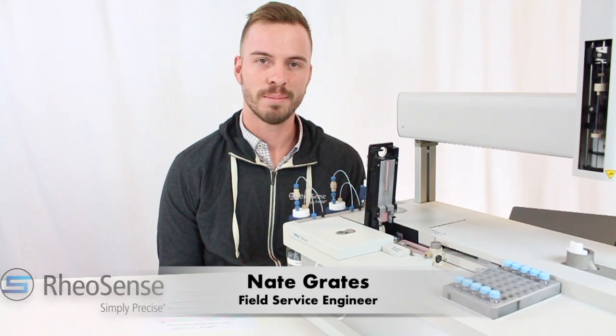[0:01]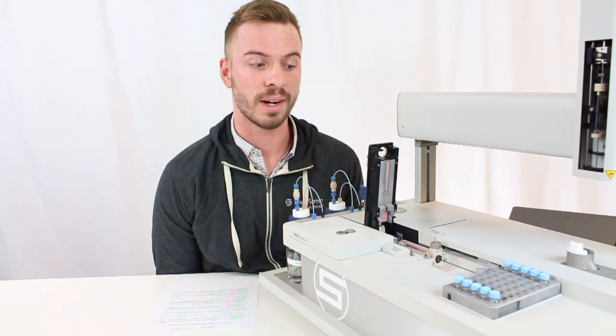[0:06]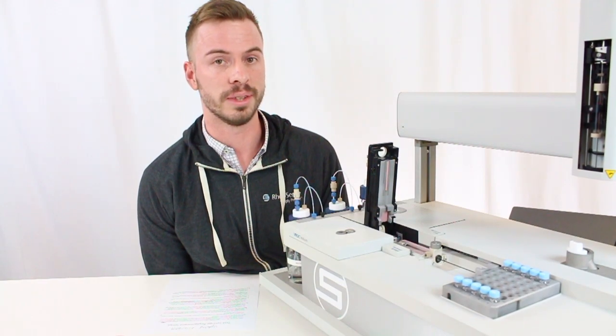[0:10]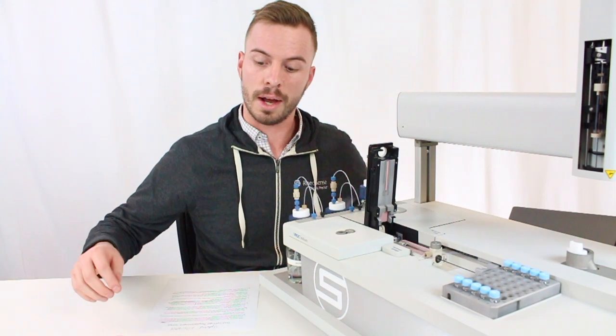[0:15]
Today we're going to be going over how to remove and replace your test syringe on your VROC Initium instrument. So first, I want to go over the tools you're going to need to do this job.
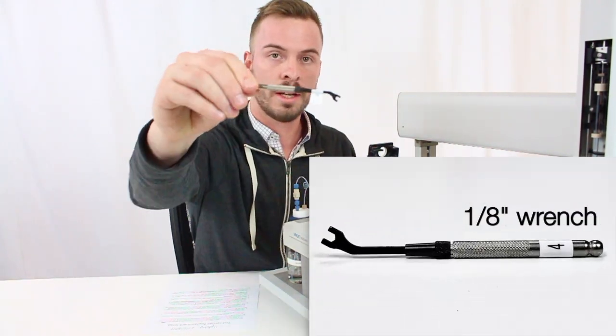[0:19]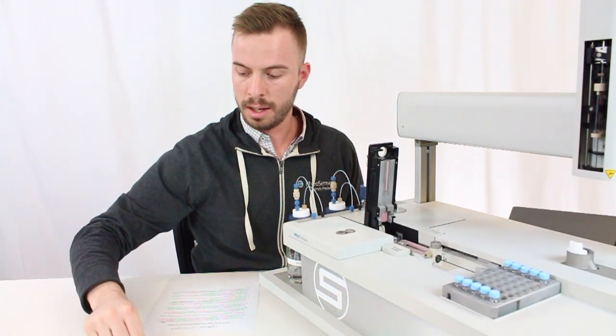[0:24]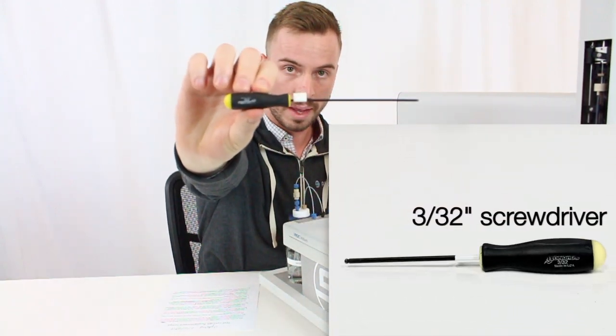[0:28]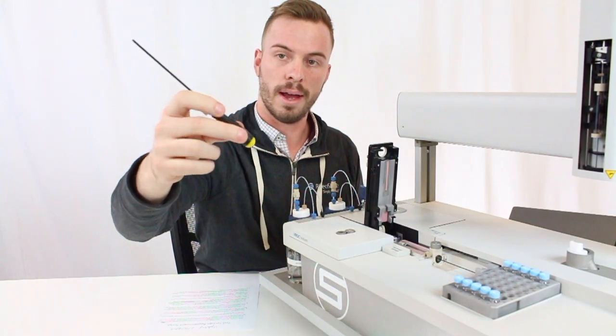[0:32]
First one is this 1/8 inch wrench. This one is provided in the starter kit that comes with your Initium. Second tool you're going to need is this 3/32 inch screwdriver. This one's a little bit longer than the normal ones that come with your starter kit, but it's the same thing.
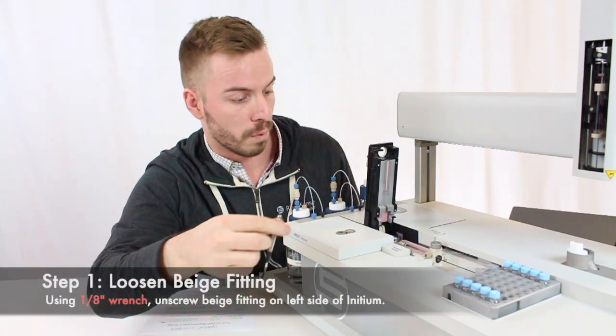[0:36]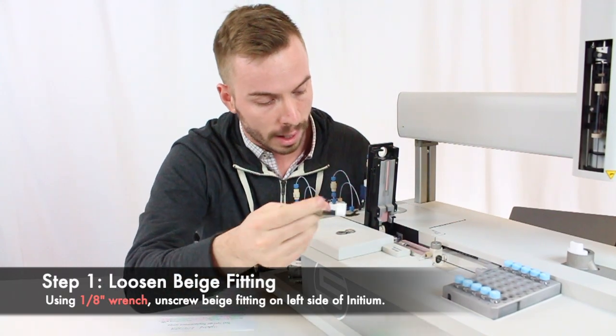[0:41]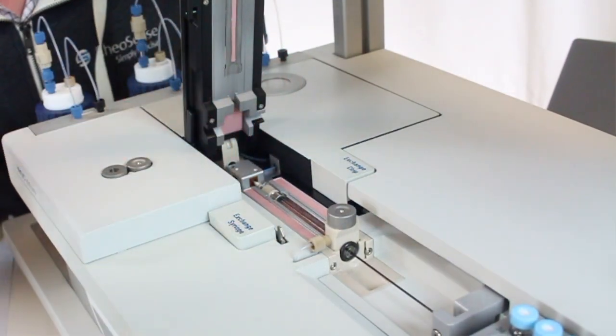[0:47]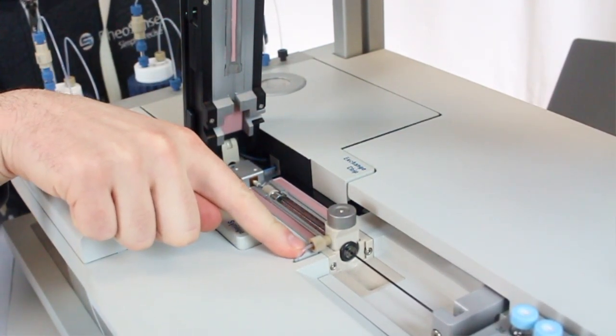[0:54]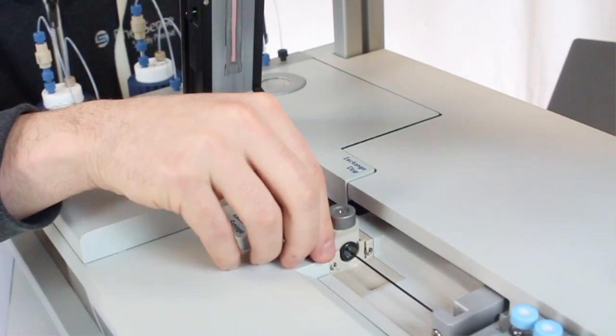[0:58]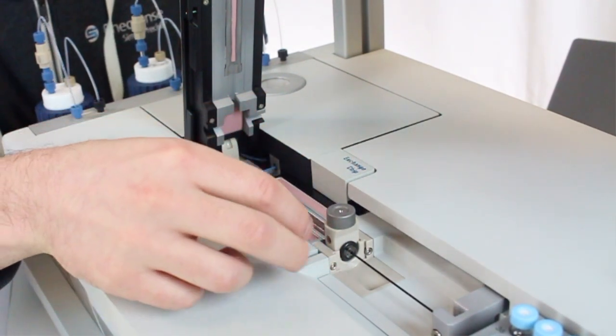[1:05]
So the first thing you need to do is remove this fitting that's closest to the left side of your Initium. So I'll go ahead and do that now. Okay, once that's taken care of, you can go ahead and remove this beige fitting from the middle of the test syringe. You don't need a tool to do that, you can just loosen it with your fingers. Once that's out, you can just kind of leave it hanging there.
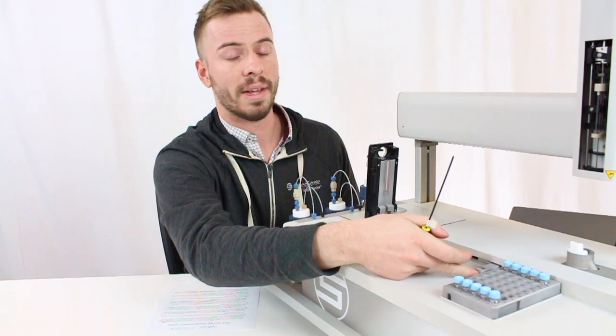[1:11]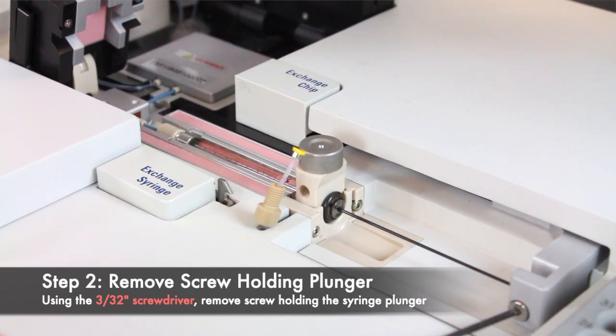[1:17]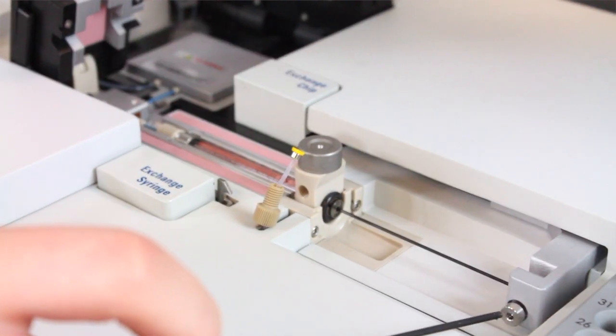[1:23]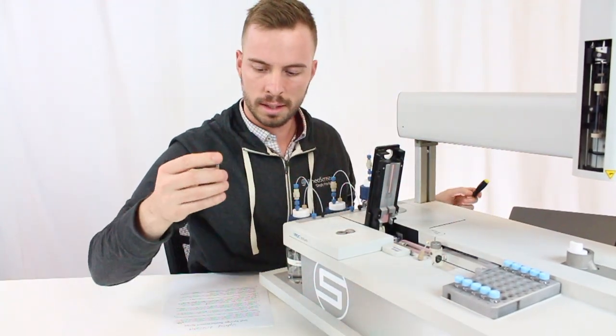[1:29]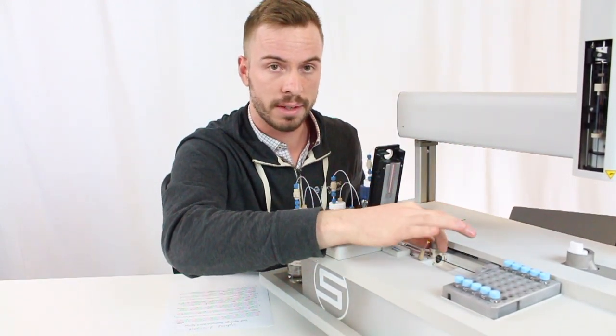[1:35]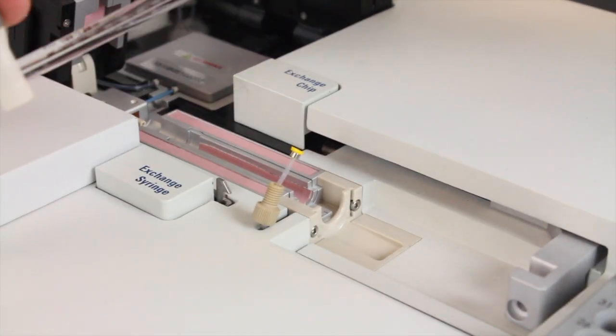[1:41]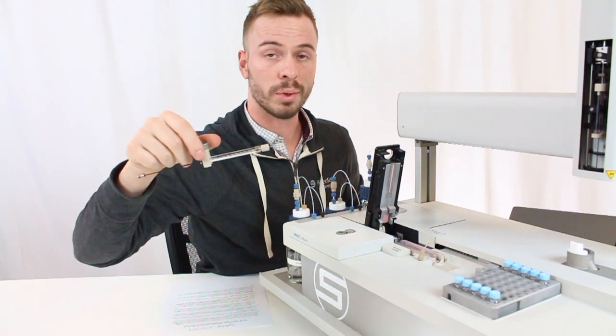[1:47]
And the last fitting you're going to need to remove is the one that's holding the plunger. That's where you're going to use the screwdriver. The screw should just slide right out of there. Once you loosen all the fittings, you can just take the test syringe, lift it slowly from the right hand side, and then just slide it out from the valve that it is in. So this is what it looks like once you take it out. To replace it, you're just going to do what I just showed you in the reverse order.
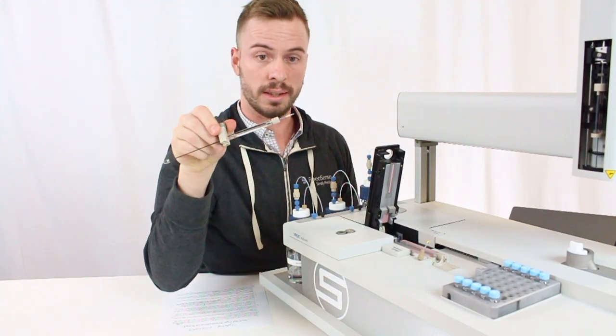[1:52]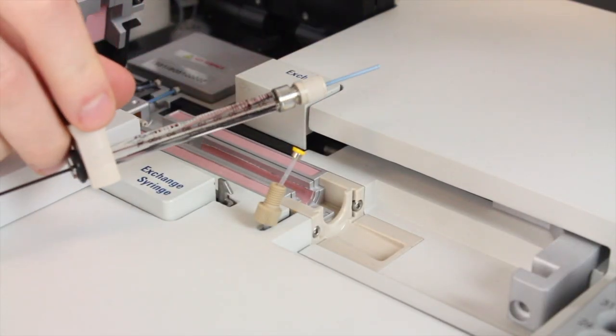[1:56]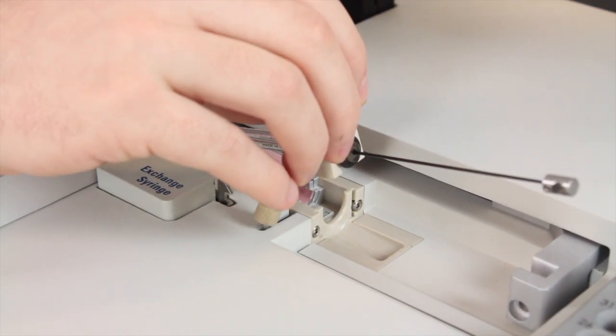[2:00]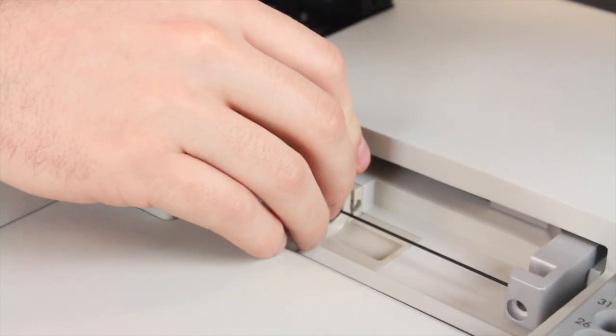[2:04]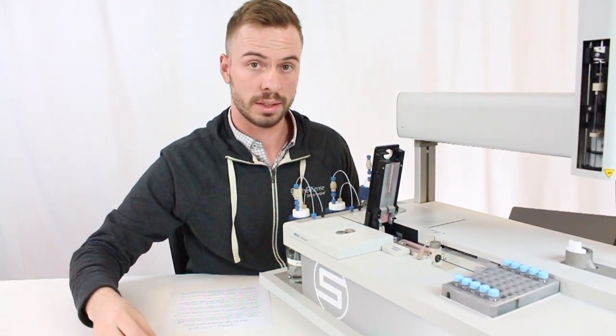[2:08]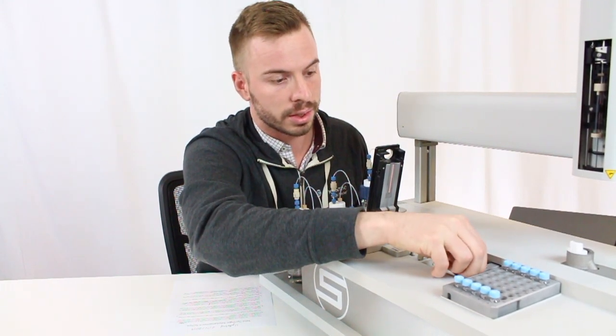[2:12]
So we're first going to take this and insert this blue tube into the valve that you took it out of. Slide it right back in, and it should fit very snug right where you took it out from. So the first thing we'll replace is the screw that you took out from the plunger. That should just slide right in there. You want to make sure your plunger is aligned so the screw has an opening to go through.
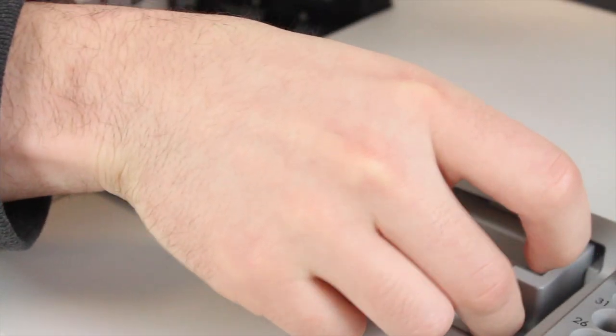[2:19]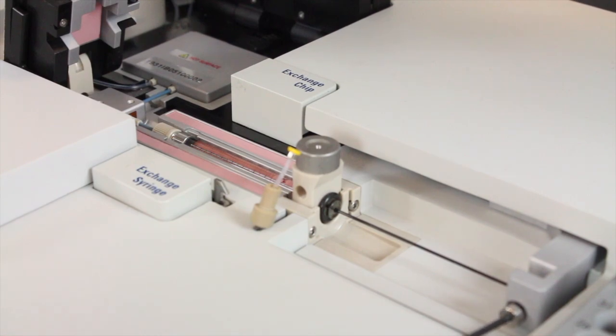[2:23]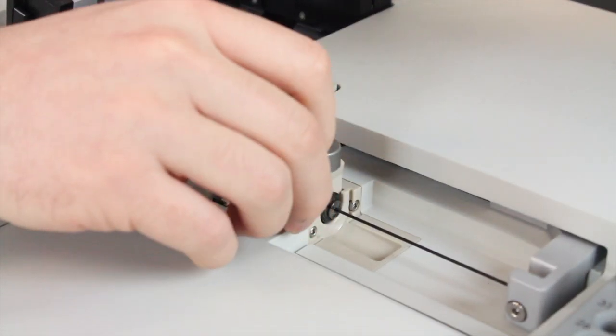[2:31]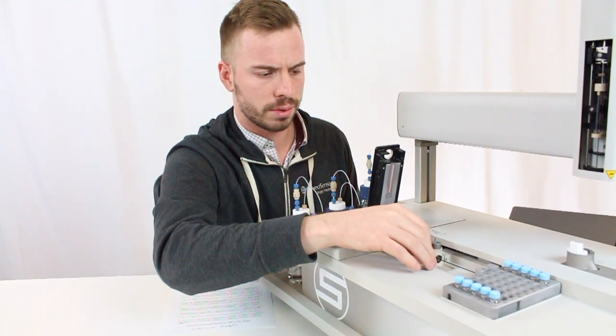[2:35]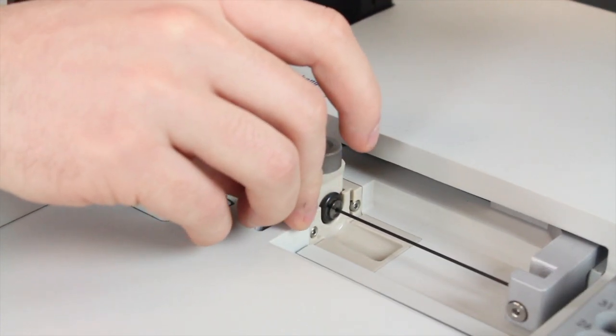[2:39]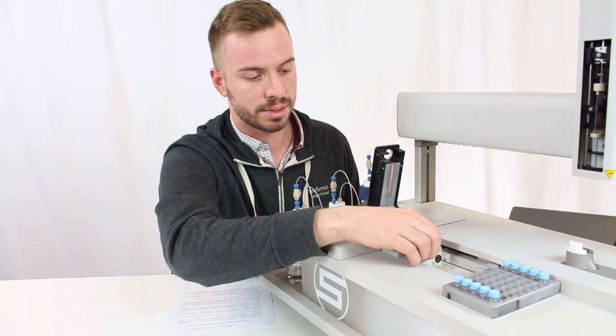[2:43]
So we're going to use this wrench again. Let's go ahead and tighten this up. Next, you're going to replace this beige fitting with your fingers again. You don't need to tighten it too much, just until you feel a good amount of resistance. You don't want to tighten it to the point where you can't take it off the next time you have to replace your test syringe.
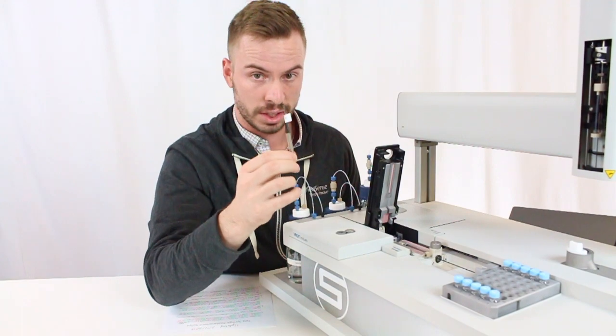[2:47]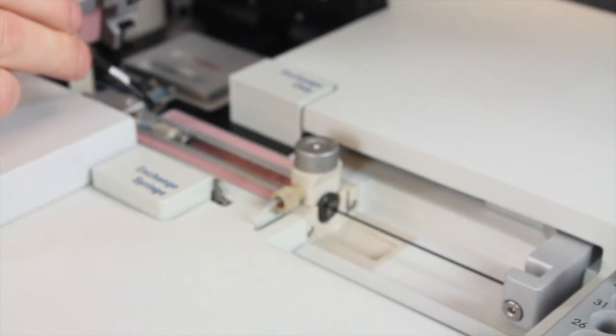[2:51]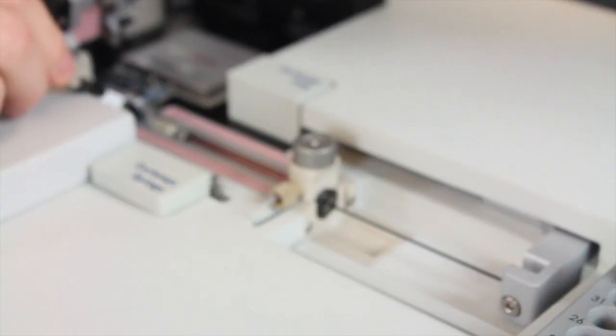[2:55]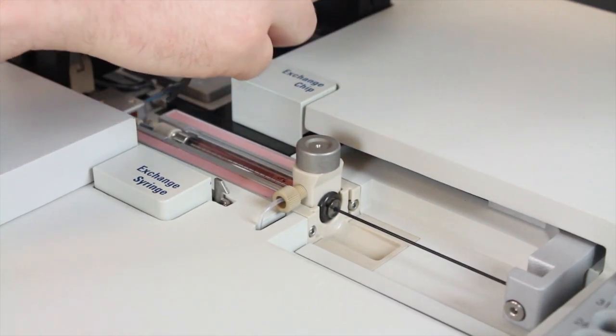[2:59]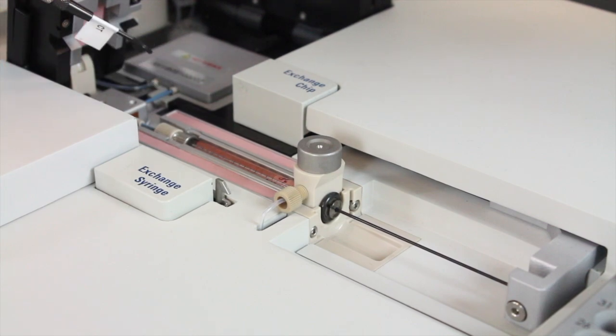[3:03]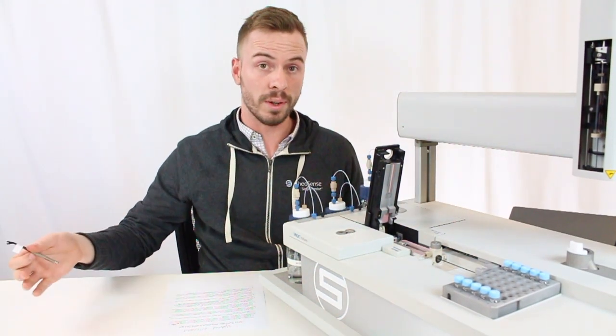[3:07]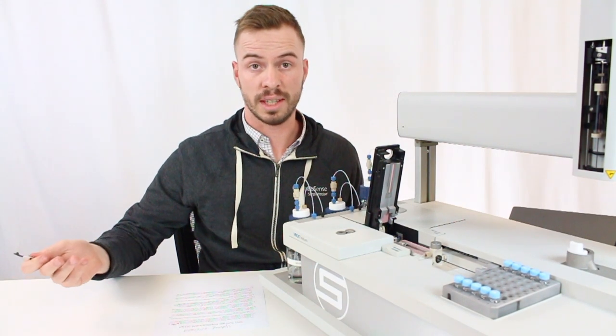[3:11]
So once that's nice and tight, you're going to take your 1/8 inch wrench again and tighten up this last fitting that goes into the valve. It might take you a couple of turns to do this. And you want to keep tightening until you feel slight resistance, and then go an extra 30 to 40 degrees. Okay, once your test syringe is replaced, next you're going to need to calibrate your test syringe.
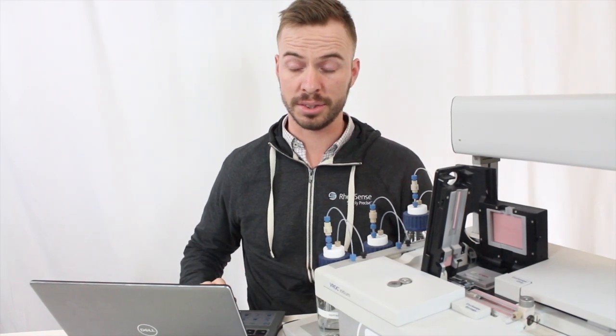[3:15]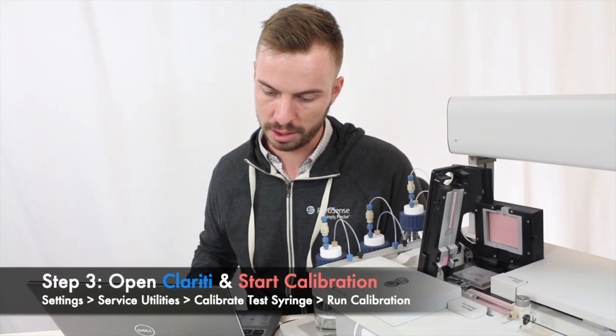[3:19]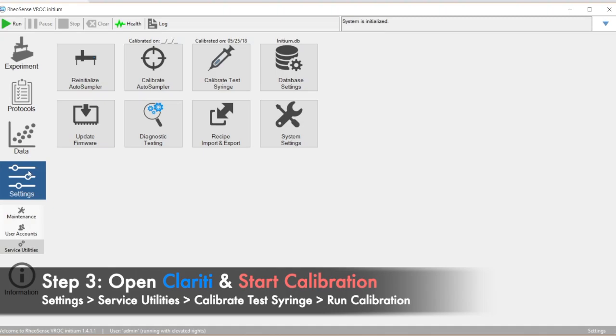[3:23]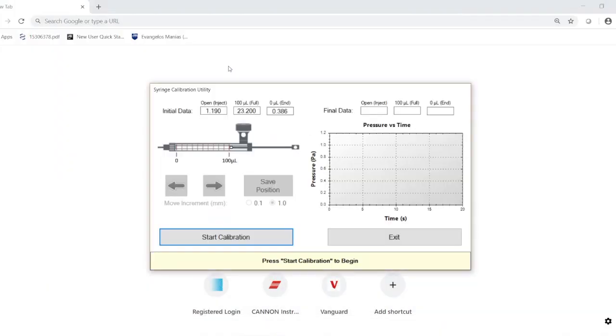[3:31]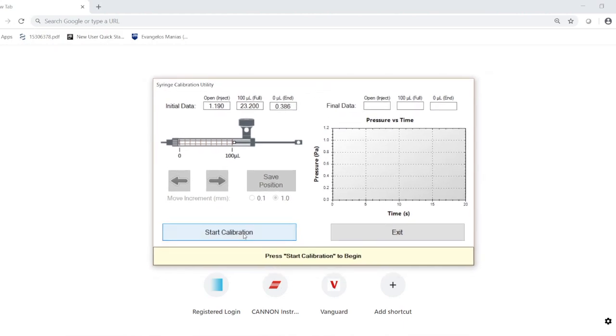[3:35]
So now for the calibration, we're going to be doing that in the software. So you're going to navigate to the test syringe calibration utility as shown. First you're going to navigate to settings. Under settings, you're going to go to service utilities, which is already highlighted here. Once you're in service utilities, you're going to click calibrate test syringe. When you click calibrate test syringe, it's going to bring up this window here. You're just going to need to click start calibration.
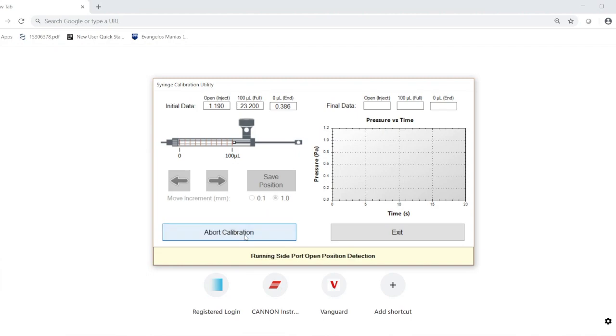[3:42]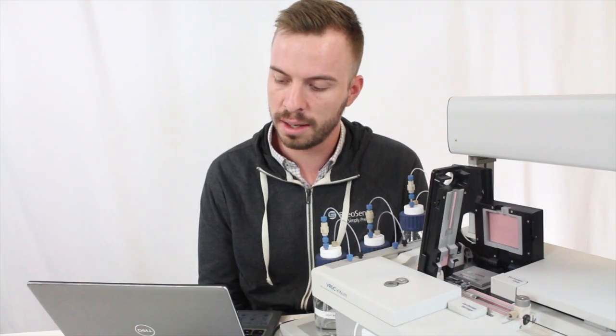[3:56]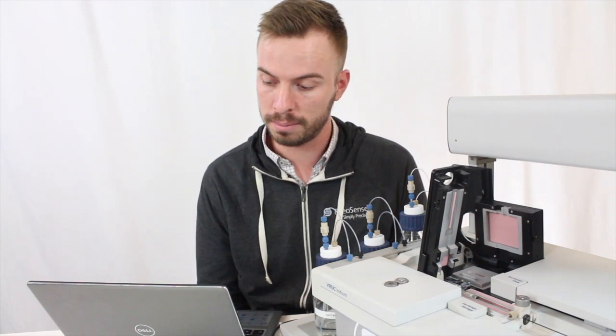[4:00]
Two of the calibration positions are calibrated automatically, but you will need to do one position manually. So when that part comes up, I will show you what I'm talking about. So it's just going to run for a little bit here. I'll just let it go until it prompts us to do the next step.
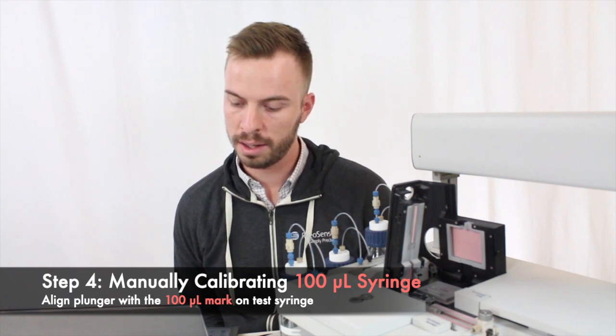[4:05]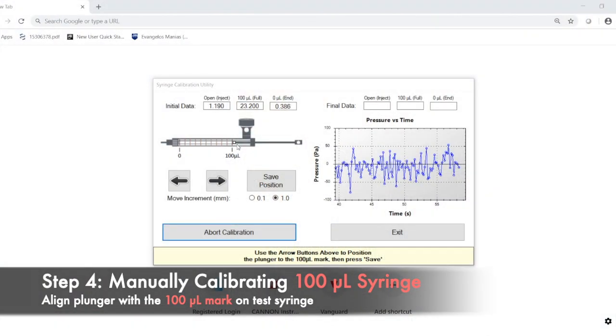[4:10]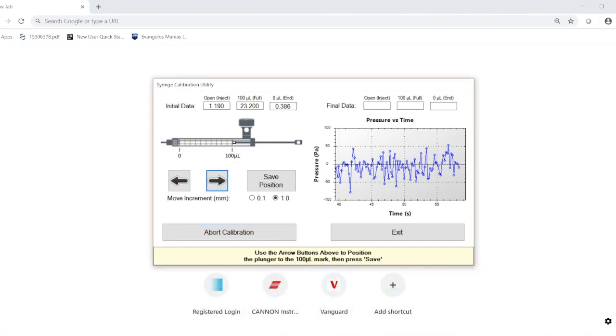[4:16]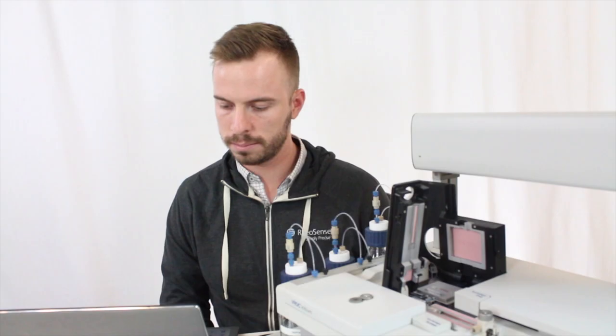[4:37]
So the one position that you're going to have to calibrate manually is the 100 microliter mark. To do this, you're just going to simply align the plunger with the 100 microliter mark on the test syringe. You're going to use the arrow keys here on the screen to move the piston left and right. You can choose the increment that you're going to move the piston in here, so it's either going to be 0.1 millimeters or 1. And you can see here in this diagram, this is how the plunger should be aligned. Once you've lined it up properly, then you can go ahead and click save position. And then the last position is going to be run automatically as well.
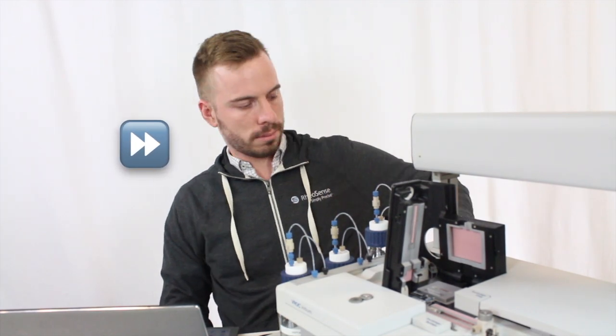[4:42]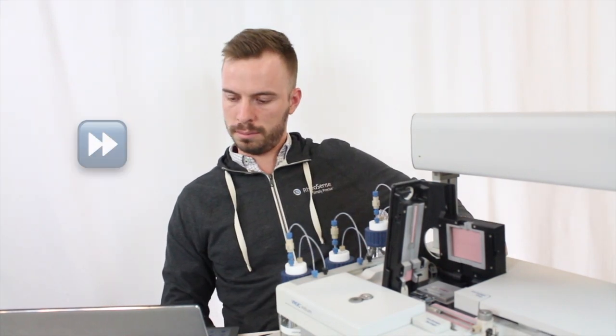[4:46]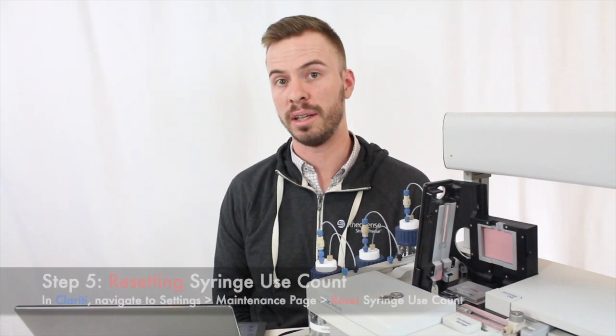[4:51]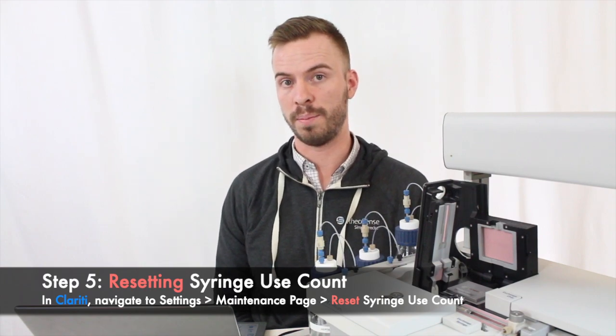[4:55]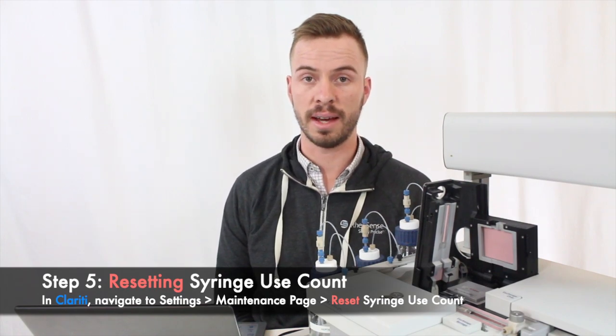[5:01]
So last, if you're replacing the old syringe with the new syringe, you're going to need to navigate to the settings and then to the maintenance page. From there, you're going to reset the use count on the 100 microliter test syringe. Once that's done, that about wraps it up for the test syringe replacement.
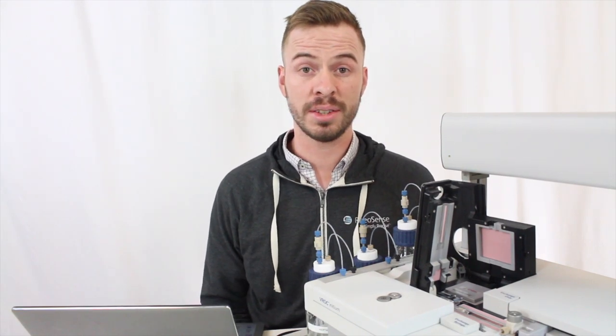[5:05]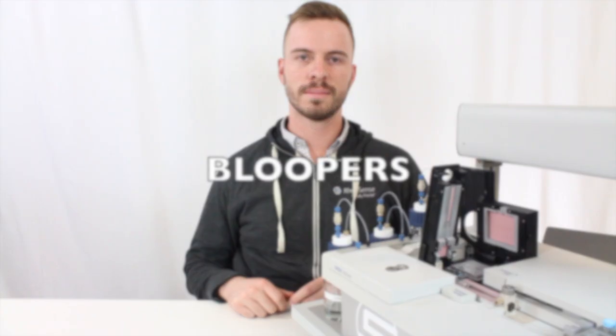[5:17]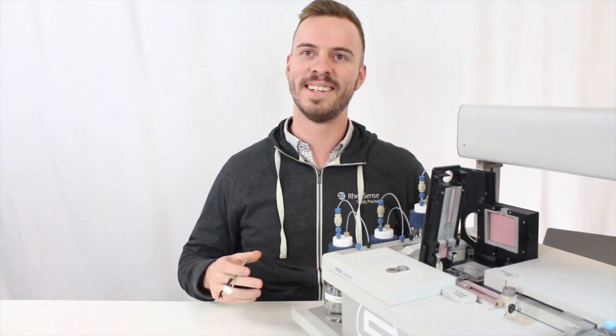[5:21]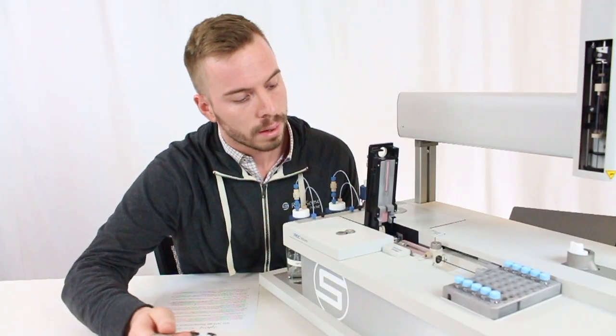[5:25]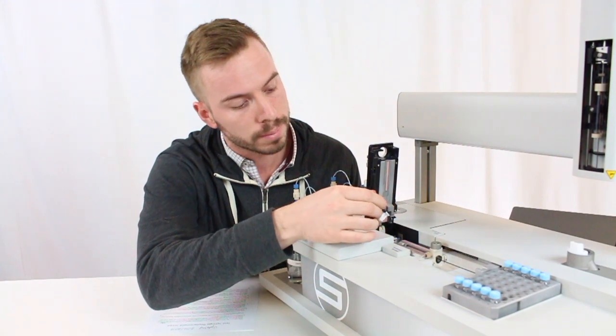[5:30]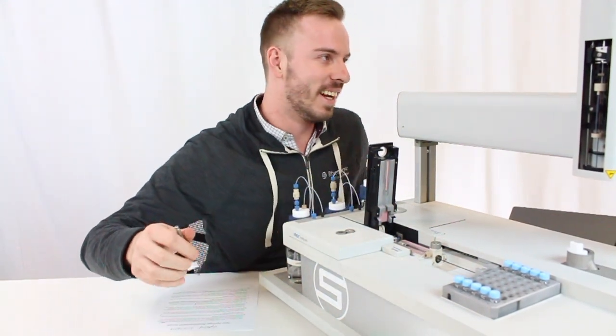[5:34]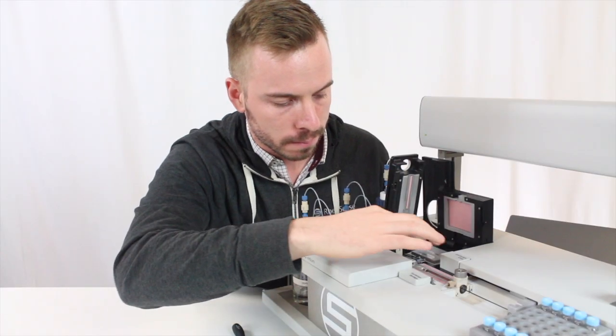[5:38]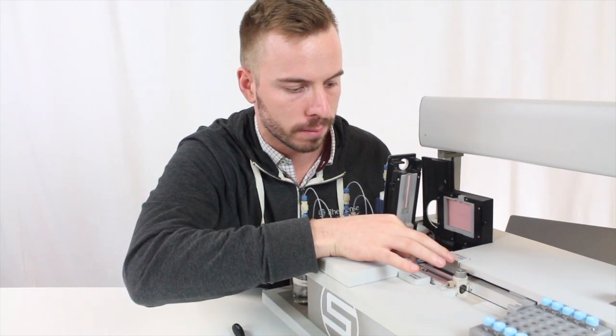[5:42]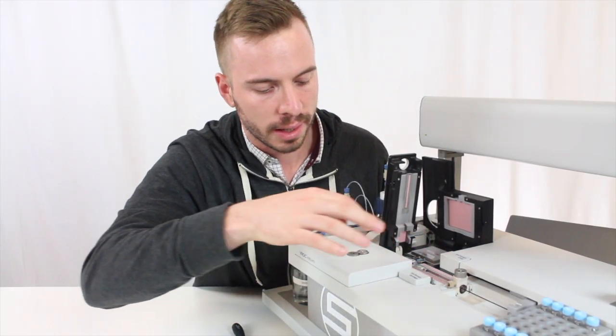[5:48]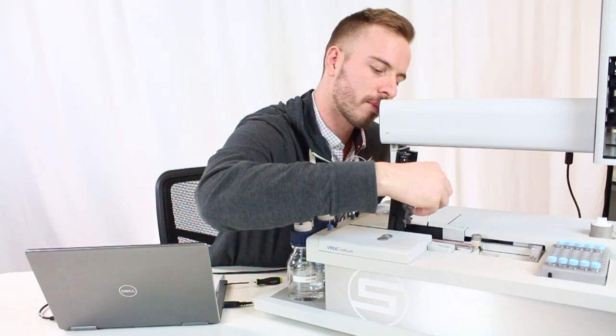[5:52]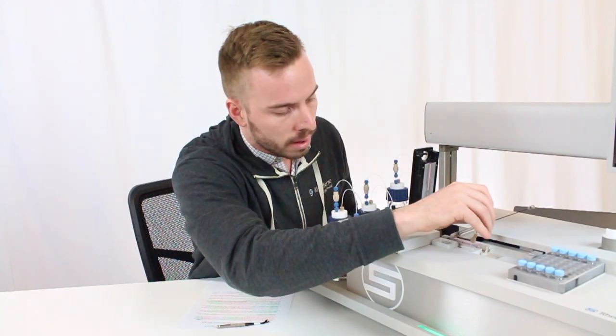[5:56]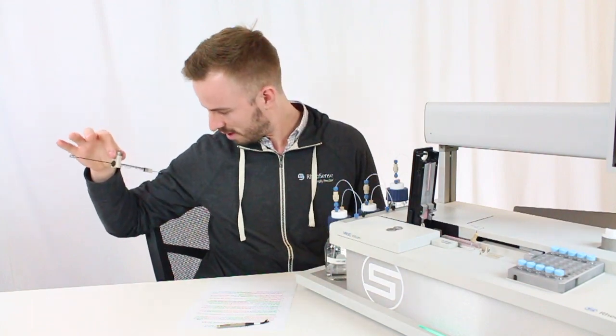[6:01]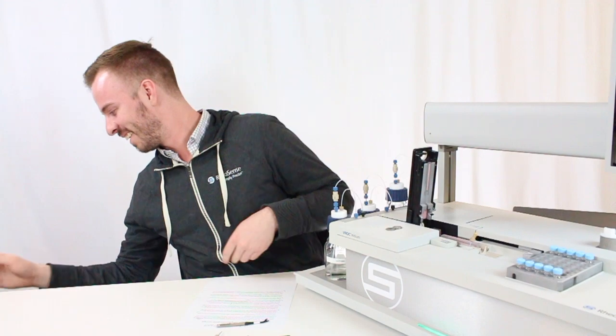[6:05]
Hi, my name is Nate. I'm a test syringe engineer. Okay. Replace this, or remove this fitting from the side closest. We can start over. Joseph, can we start again? Yeah. Okay, cut. Syringe and slide it right out. Should come out fairly easily. This is how it looks once you take it out. Cut. That's good. I needed to redo it. Okay.
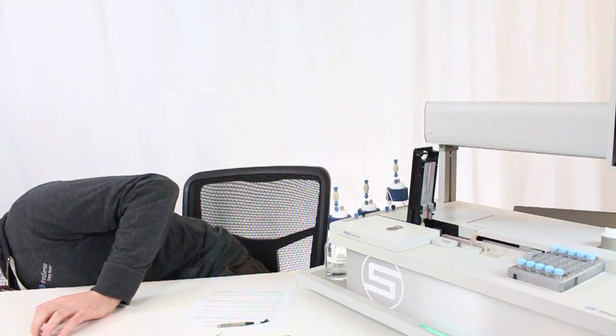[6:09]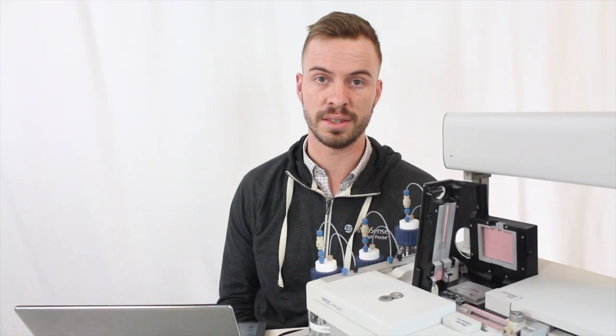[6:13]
No worries. Contact us at sales@rheosense.com, or you can reach us at 925-866-301. No? Okay. No phone number? No phone number, because we'll have everything in there already.